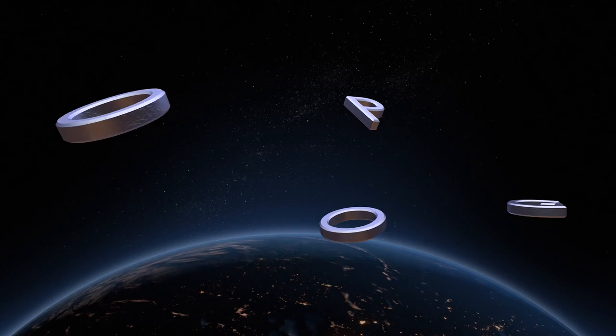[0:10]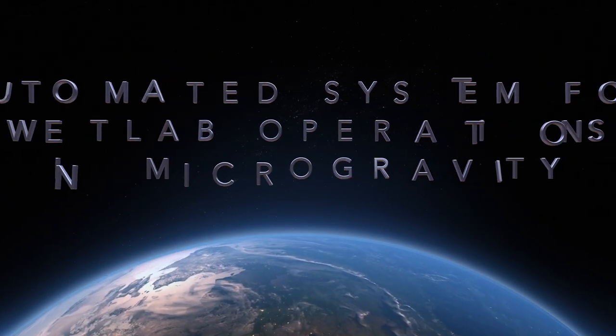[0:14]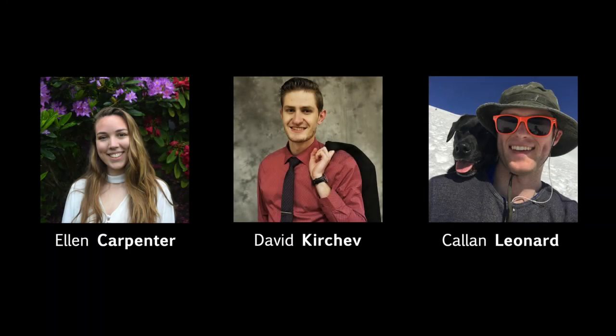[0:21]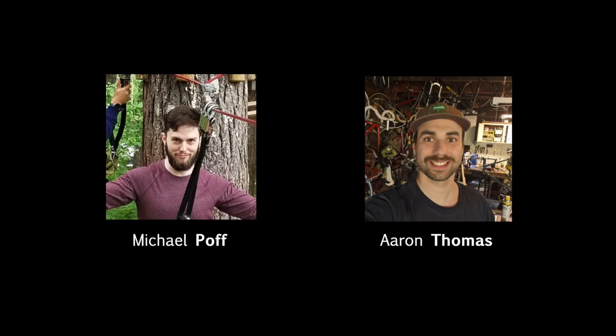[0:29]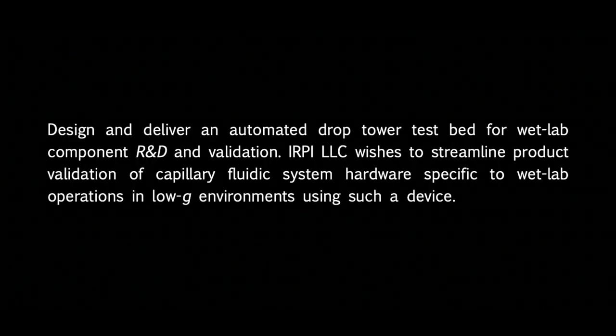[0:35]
This is the automated system for wet lab operations in microgravity, MMEC, Senior Capstone Project. Our group consists of seven members, who are Ellen Carpenter, David Kirchev, Callan Leonard, Josh Mack, myself, Mohamed Polavina, Michael Poff, and Aaron Thomas. The objective of our project is to design and deliver an automated drop tower testbed for wet lab component research and development and validation.
Our sponsor, IRPI LLC, wishes to streamline product validation of capillary fluidic system hardware specific to wet lab operations in low-gravity environments using such a device. Essentially, our goal is to create a microgravity test apparatus, which we call the MGTA, that would meet the predetermined objectives that we were given while taking into consideration reliability, repeatability, and user-friendliness.
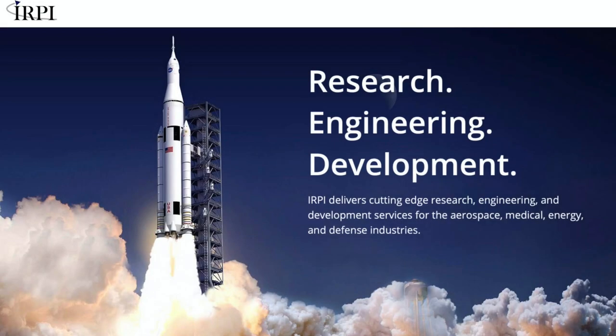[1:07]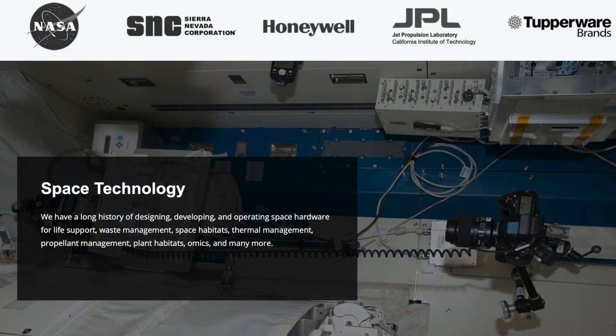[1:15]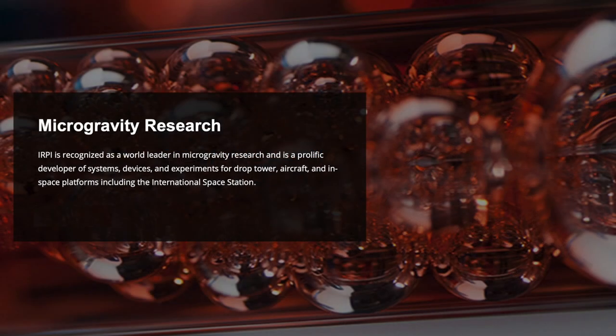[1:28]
Our sponsor, IRPI, provides research, engineering, and development services for the aerospace, medical, energy, and defense industries, and have worked with companies such as NASA, SNC, Honeywell, JPL, and Tupperware brands. They specialize in designing, developing, and operating space hardware for things such as life support, waste management, space habitats, thermal management, and so forth. IRPI is also recognized as a world leader in microgravity research and has been developing systems, devices, and experiments for drop tower tests, aircrafts, and in-space platforms such as the International Space Station.
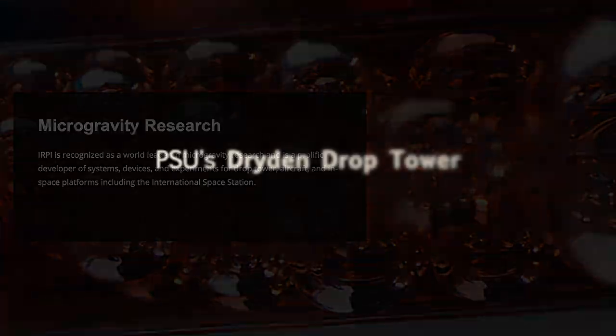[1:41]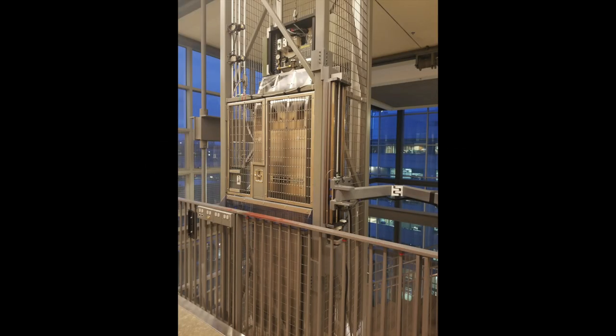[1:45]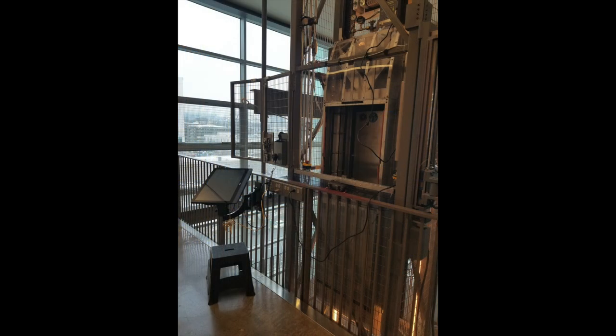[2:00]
PSU has granted us supervised access to their Dryden drop tower located in the engineering building for testing purposes. In general, drop towers can simulate microgravity conditions reaching as low as 10 to the negative 6 G. The Dryden drop tower at PSU can simulate as low as 10 to the negative 4 G, while free-falling a total distance of 22 meters, or 72 feet. The total drop tower height is 31.1 meters, or 102 feet.
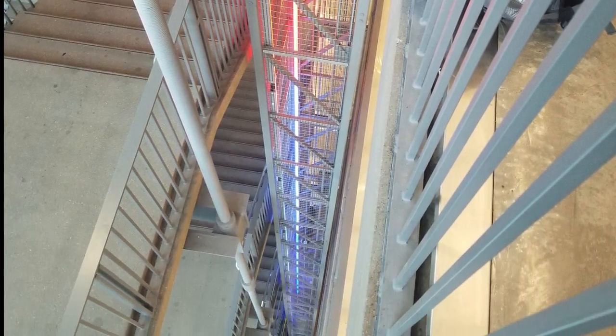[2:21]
The anticipated low G duration during drops is around 2.1 seconds, which equates to the amount of time we have to execute our programs. The object falling in the drop tower experiences an average deceleration force of 8.5 Gs and a peak deceleration force of 15 Gs.
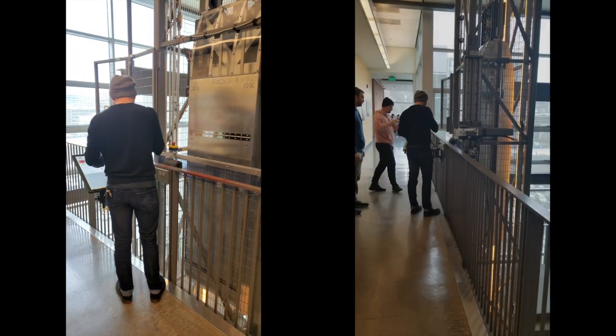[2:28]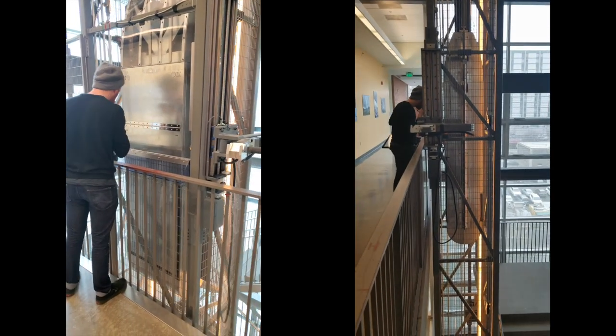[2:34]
Here's the drop tower in action with Jesse Goodman as the operator. There are microphones and speakers installed to help communicate to floors below that a drop is about to occur. 2, 1, drop!
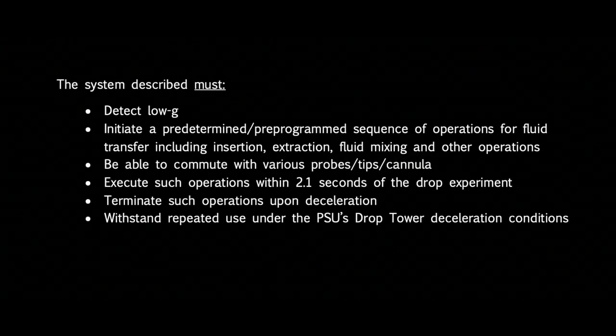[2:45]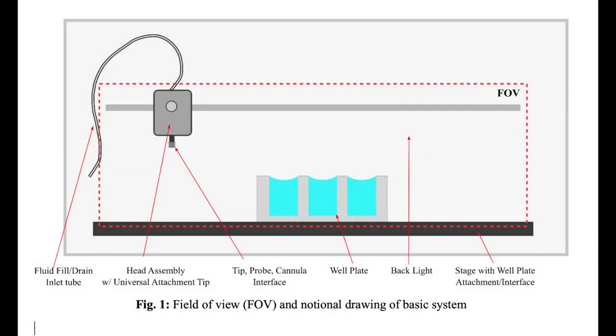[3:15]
Our sponsor, IRPI, has indicated that the system we design must be able to detect low G and initiate a pre-programmed sequence of operations for fluid transfer, including fluid insertion, extraction, mixing, and other future operations. The system must be able to commute with various probes, tips, and cannula, and must complete test operations within the 2.1 second test window. The system must be able to terminate operations upon deceleration and withstand repeated use under PSU's drop tower deceleration conditions. IRPI also provided us this figure, showing an example of an illuminated visual field of view of operations.
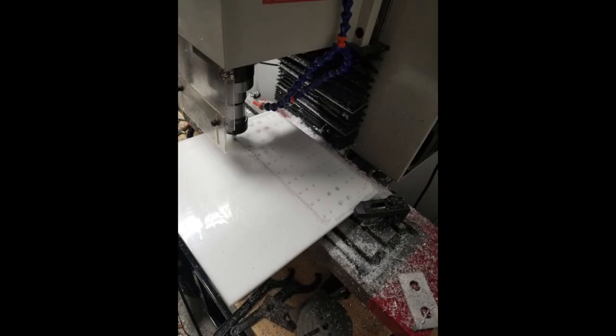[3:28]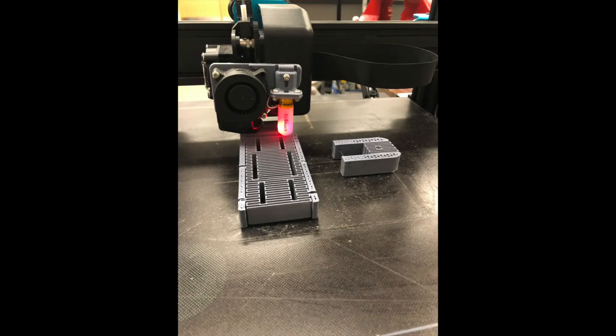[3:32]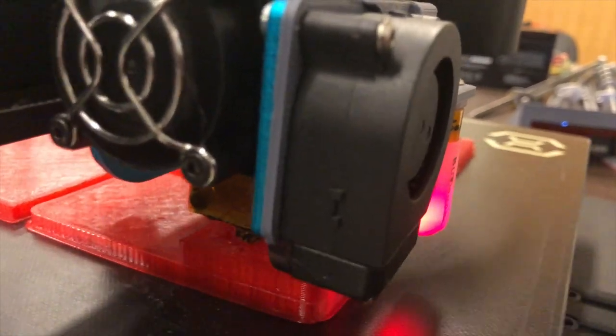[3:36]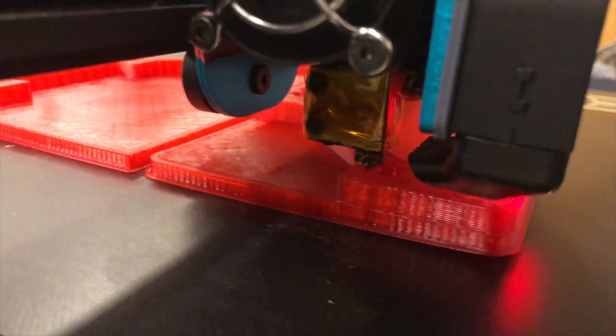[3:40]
The majority of the parts in all of our prototypes were custom designed and manufactured in-house by our team using SolidWorks, Michael's CNC mill, 3D printer, and bandsaw. Here's a shot of the 3D printer making the initial electronics case for the first prototype. For the most part, we used either red or gray PLA Pro, PLA Plus, 3D printer filament for the printer material.
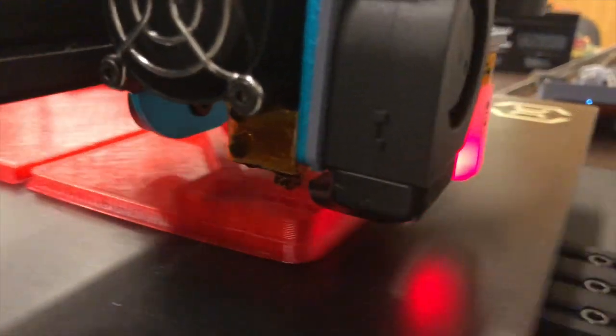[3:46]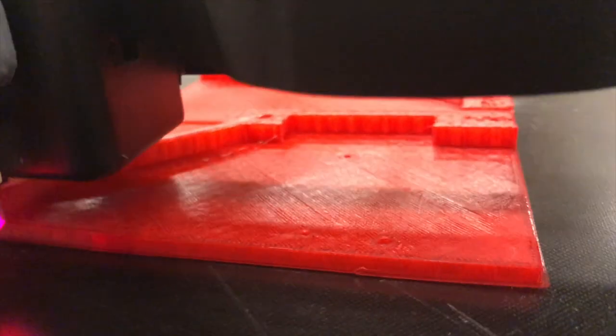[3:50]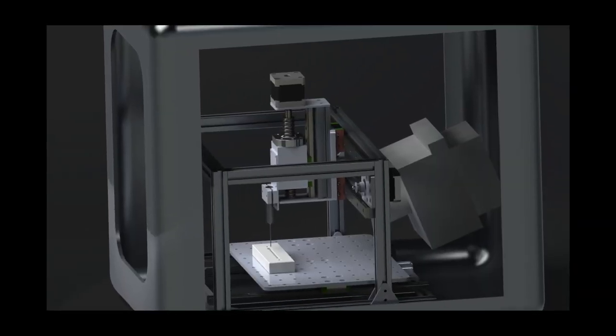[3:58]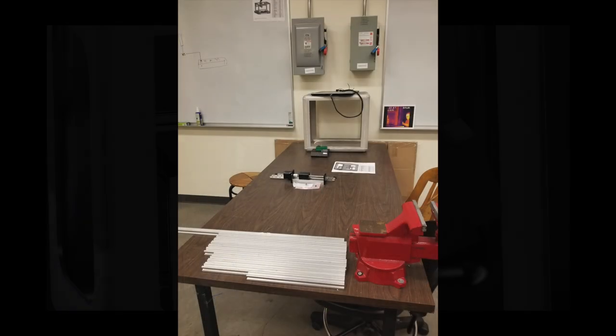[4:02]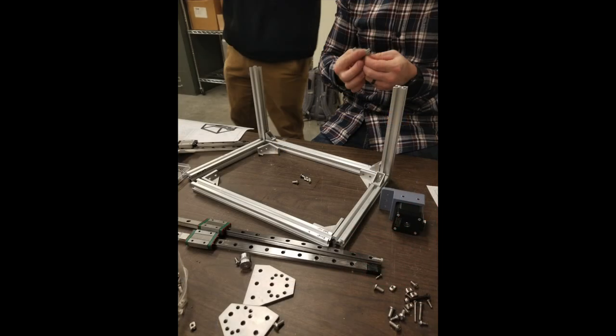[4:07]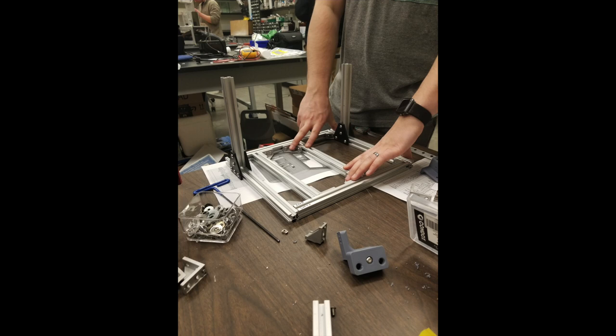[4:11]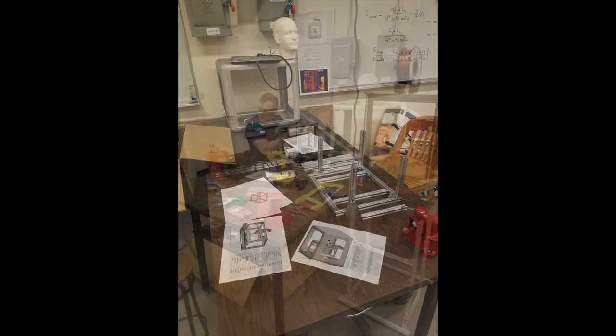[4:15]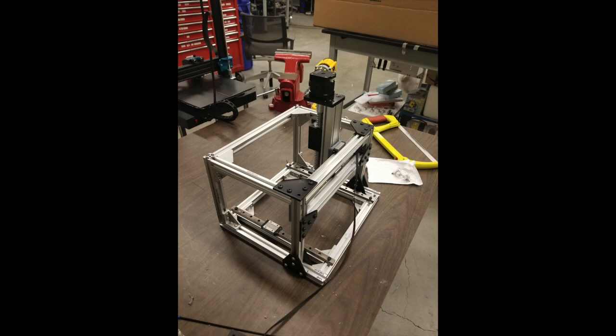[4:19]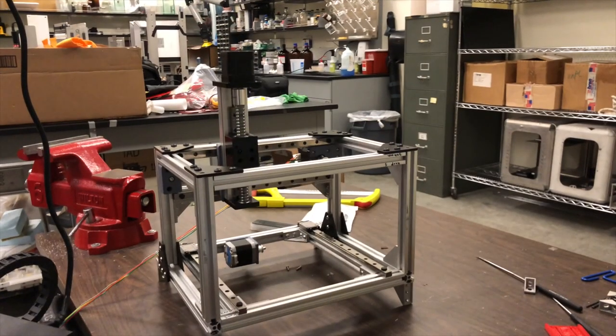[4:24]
The first prototype was our proof of concept, as it was an attempt to see if our collective ideas regarding the MGTA would work. We designed a standalone system which would be placed into the aluminum shell provided by IRPI and PSU. The foundation of the system was made from T-slotted 6063 T5 aluminum extrusion held together by metal brackets and screws. We attached a linear Z-axis ball screw with a built-in stepper motor which gave us 100 millimeters of travel up and down. This was our first electronics control test with the ball screw.
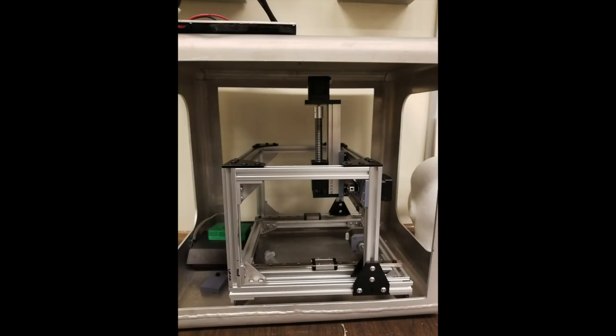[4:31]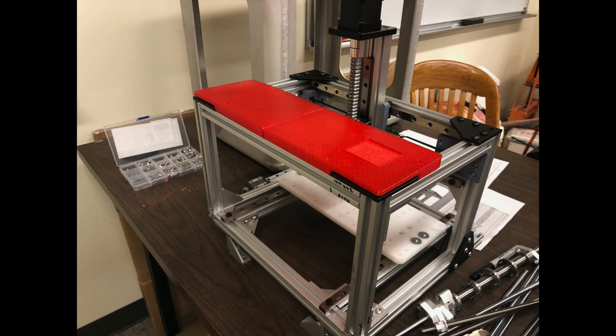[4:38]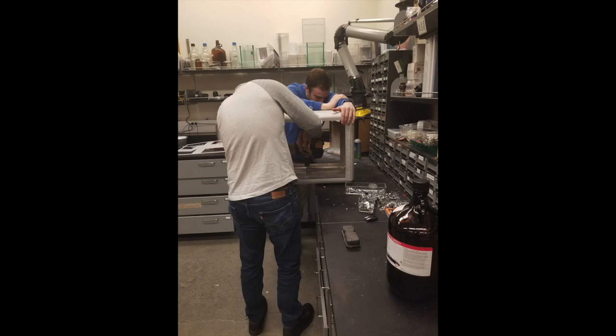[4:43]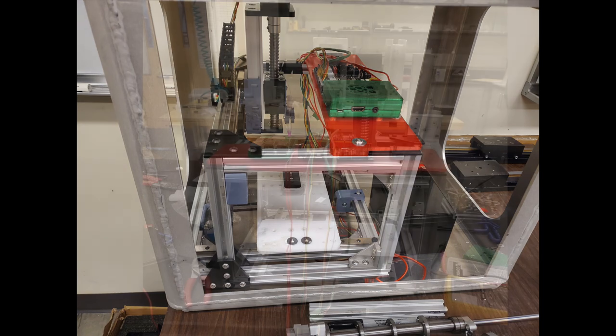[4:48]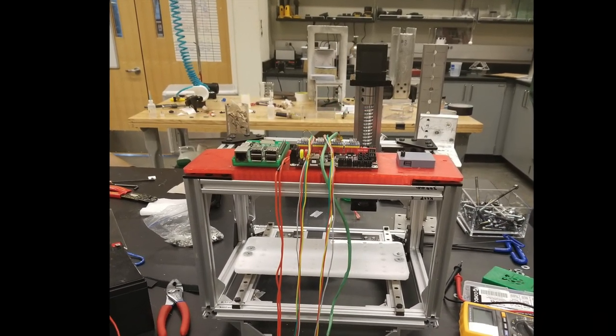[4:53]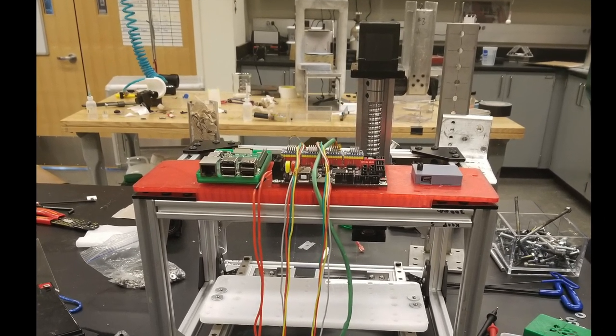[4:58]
We had a sliding bed which was attached to two linear guideways coupled to a single stepper motor. The bed could move back and forth in a single direction at variable speeds and was designed to allow different well plates and objects to be attached to it. We bolted the frame of the system onto the aluminum shell, restricting movement of the MGTA while free-falling in the drop tower. The custom-made electronics case housed the 32-bit panel board controller, a Raspberry Pi for later use, and an accelerometer which we use as a triggering mechanism for the programs once sensing low G.
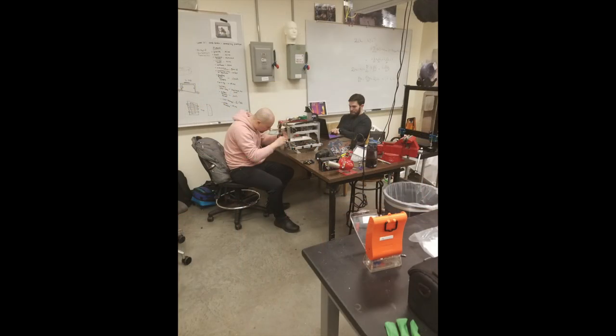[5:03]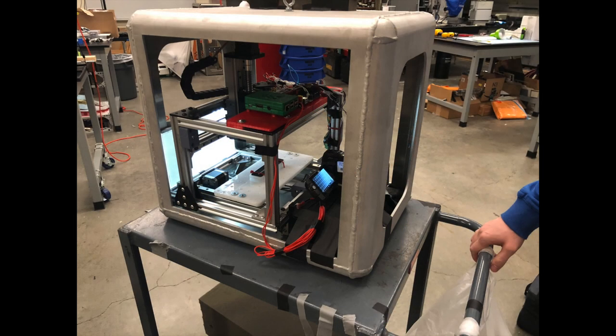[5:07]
After compiling the board firmware and troubleshooting the software, a few dry runs, and ensuring that the rig was balanced, we were ready for our first test drop, which ended up validating our system functionality. This video shows the program we wrote successfully initiated once the trigger sensed low G.
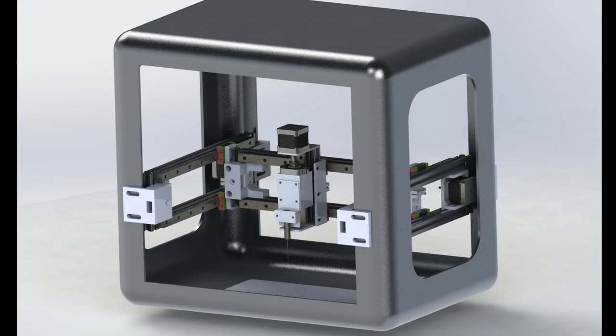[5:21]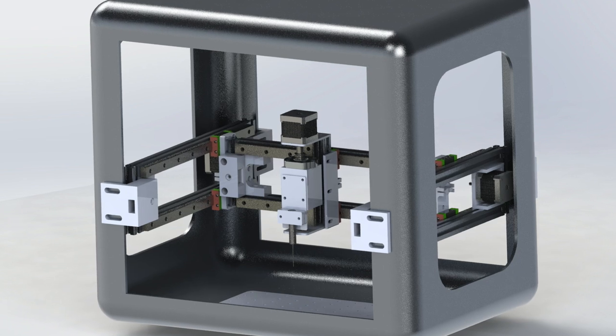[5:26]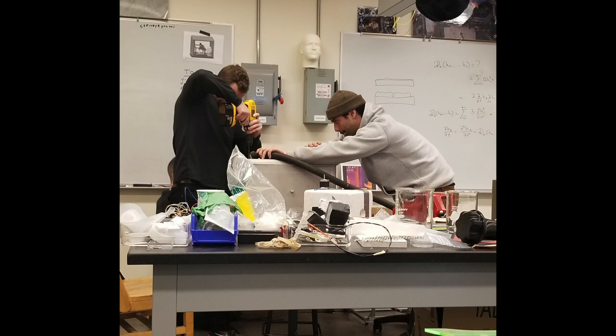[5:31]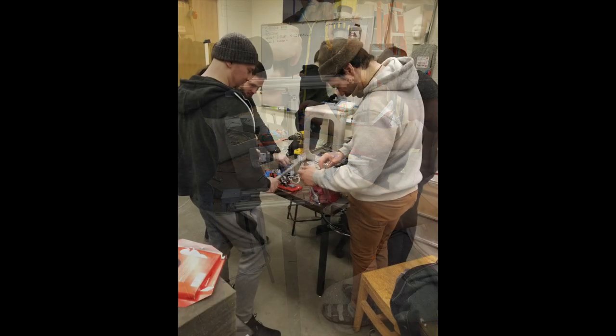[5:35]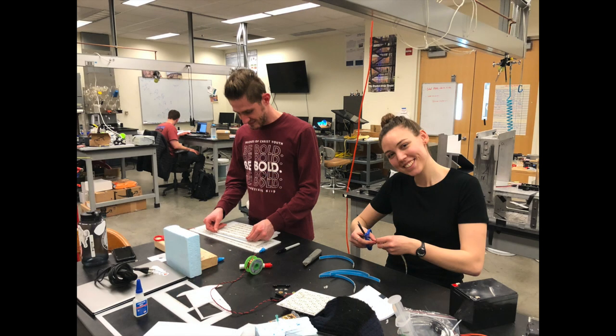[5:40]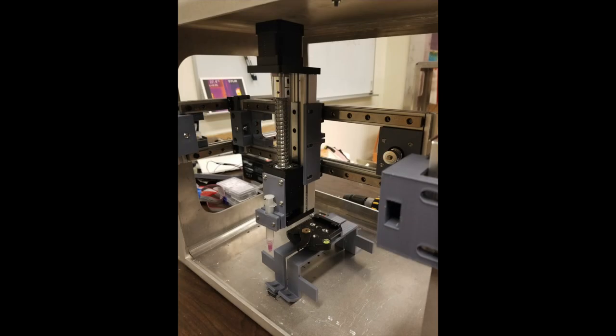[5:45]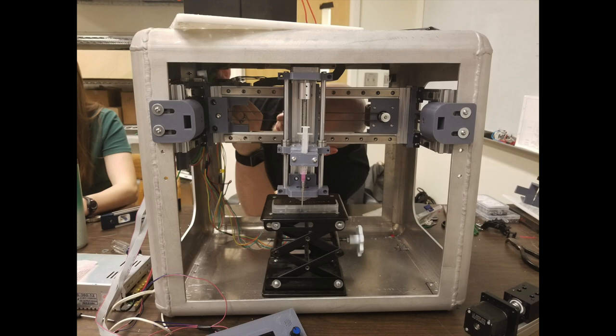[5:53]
After some feedback from our PSU advisor, Mark Weisslogel, and our sponsor, IRPI, we introduced our plans for a second prototype, which would be attached directly onto the aluminum shell we were provided. This eliminated the sliding bed and in turn allowed the probe head to move in all three directions at variable speeds. We were able to reuse most of the frame components from the first prototype with some minor adjustments. We also created a new lighting system made from LED strips with a diffuser attached on top. This updated design allowed us to use the existing mechanism attached to the drop tower to move the MGTA into and out of the drag shield with more ease.
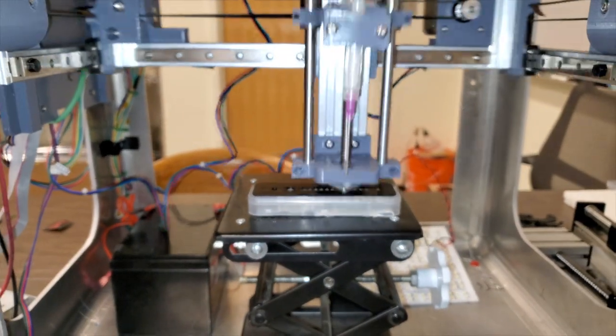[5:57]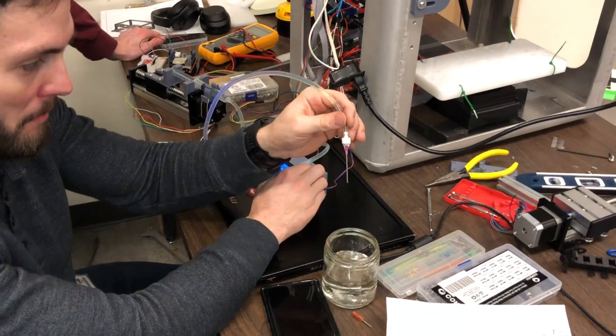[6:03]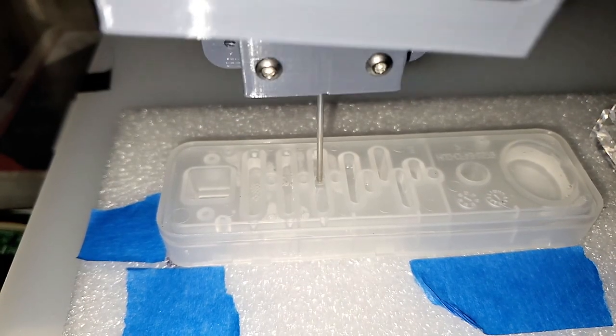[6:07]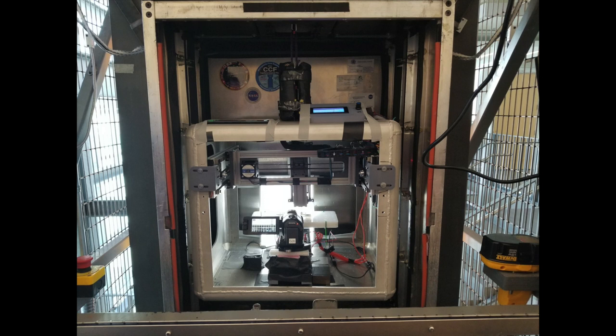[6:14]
This was one of the repeatability tests we ran on the second prototype, which also verified smooth motion in all three directions. We were able to attach our custom-made fluid pump powered by a stepper motor connected to the main board. Here's the system in action with the pump inserting and extracting liquid through the needle attached to the probe head.
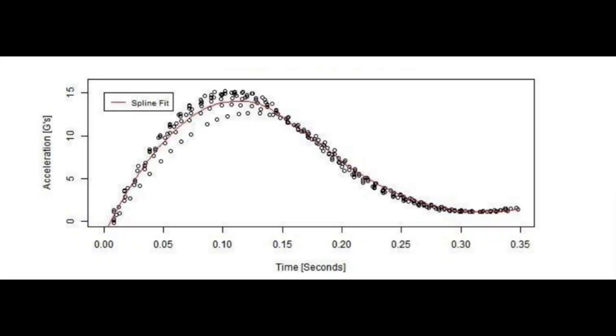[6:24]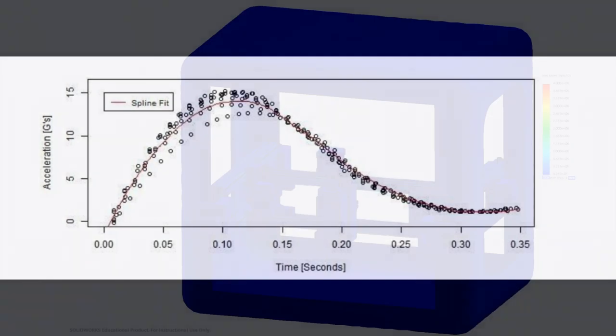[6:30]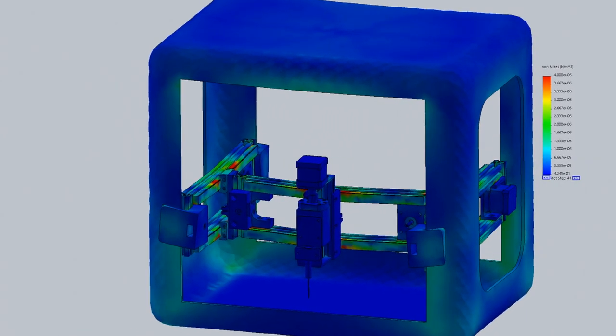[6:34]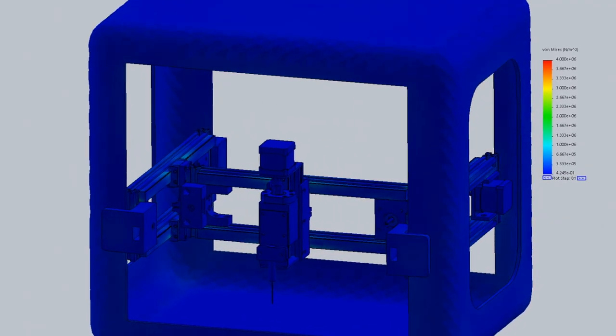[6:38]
We were able to run a few drop tests with the second prototype and gather vital data which allowed for further analysis. Using data collected from an IMU attached to the MGTA during several drops, we confirmed that the maximum impact forces reached about 15 Gs during deceleration. This data was then used to simulate drop conditions using finite element analysis software, which allowed us to continue studying the forces and deformation on the different subsystems in our models.
The data we captured for our second prototype showed an overall factor of safety of about 80, which means that this model was over-designed. The issue we discovered was, because the probe head, which was fairly heavy, hung off of the two support rods, it acted like a cantilevered beam. Because the center of mass was offset from the center of geometry, when acceleration was applied downwards, the probe head wanted to twist the two rods, creating a moment.
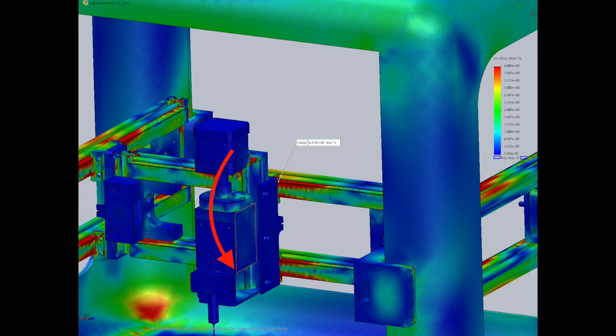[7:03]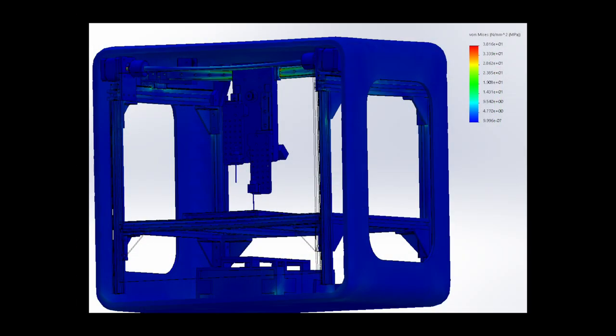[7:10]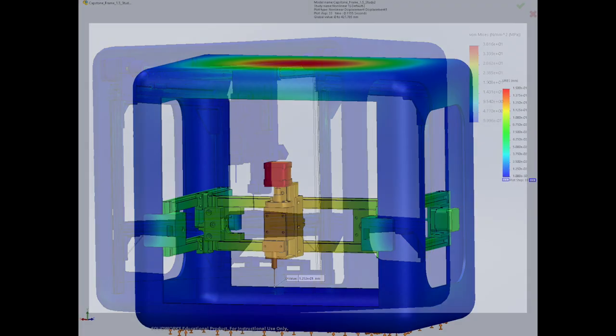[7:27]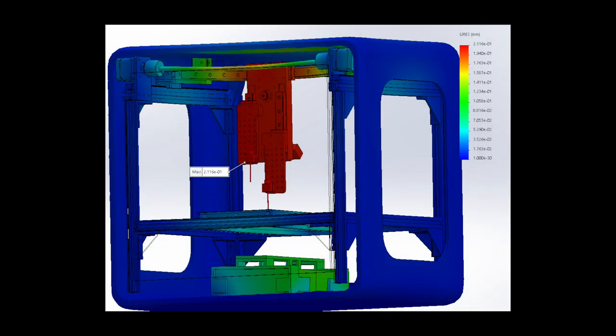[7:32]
We actually saw the two support rods twist out of position slightly with each drop, even though they were both secured to the frame. For this reason, we adjusted the design again in the third prototype, eliminating a lot of unnecessary weight, and reduced the factor of safety to a more reasonable value of 3.7. We moved the stepper motor down and behind the linear rail, which acts as a support rod. The center of mass is now roughly on the bearings, which should result in much less twist. Maximum vertical displacement stayed below 0.25 mm for both the second and the third prototypes.
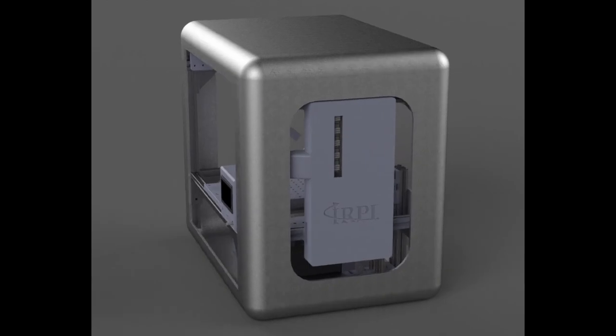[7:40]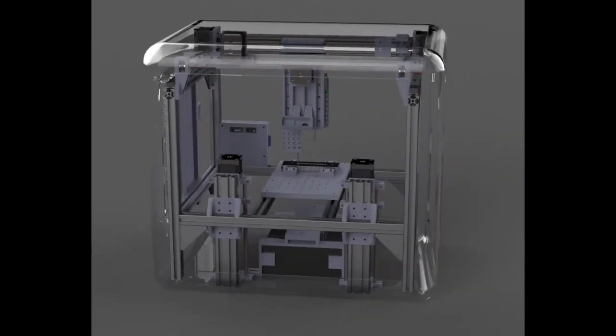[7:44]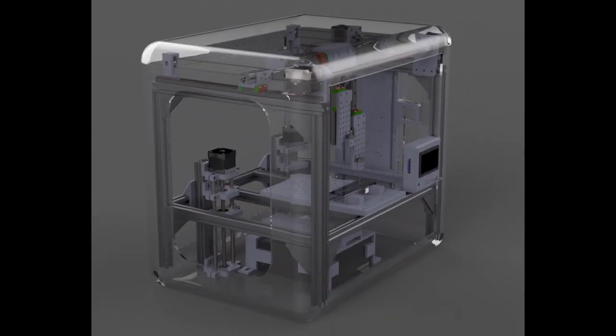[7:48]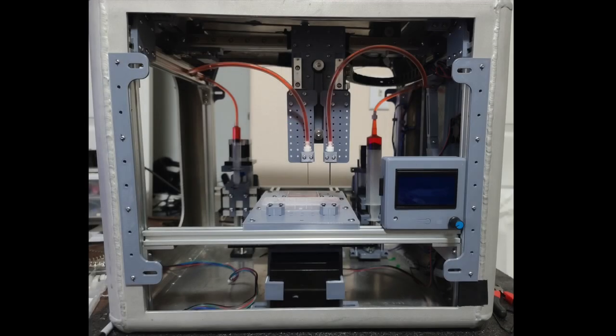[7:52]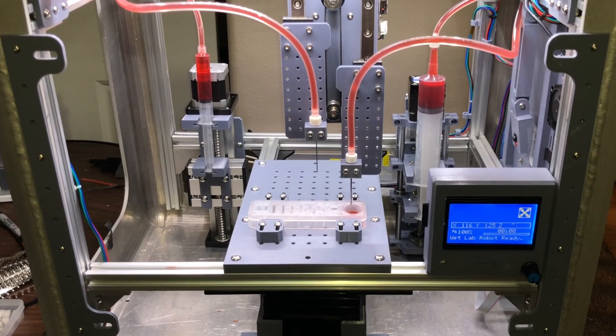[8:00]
This is our third and final prototype, and is the culmination of our research and experience gained throughout this last year. Many components of the second prototype were changed with this new design, which allows for more space inside of the rig, better access to all of the components, and a more sophisticated probe head, or end effector. As you can see, the final prototype now has two different pumps connected to different probes, with a new mechanism allowing for interchangeable tips on each one.
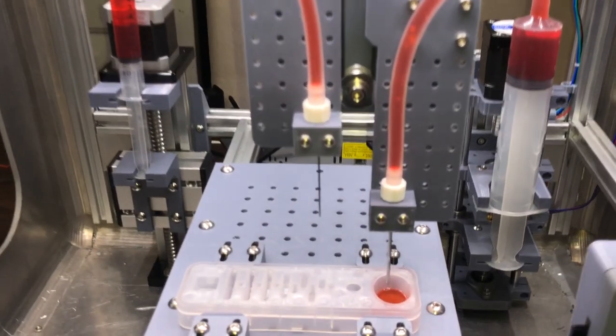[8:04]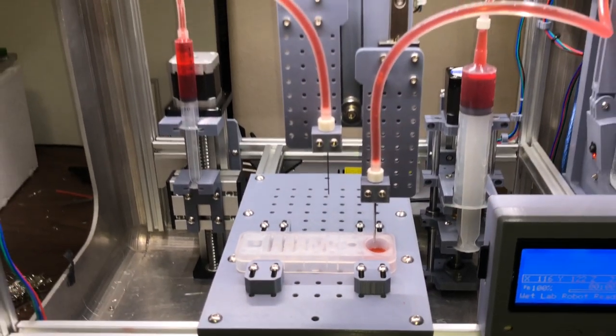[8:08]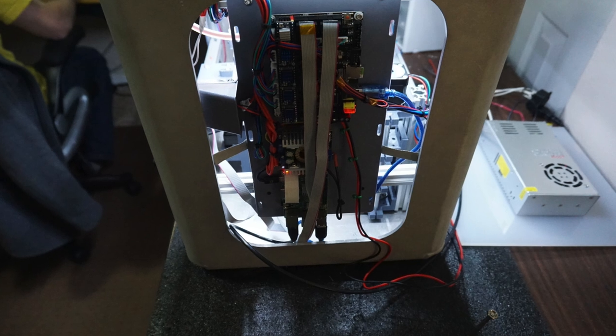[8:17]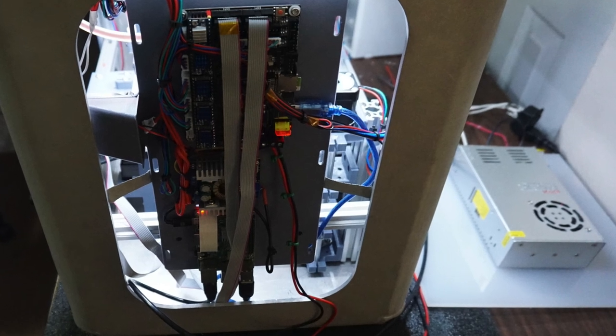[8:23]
We have two smaller cameras for user visibility, a larger LCD screen attached to the front, which has an SD card slot on the side, and an integrated electronics case housing all of the important components which make the MGTA work. In order to preserve the two 12-volt batteries that we have, we connected the system to a designated power supply shown on the right.
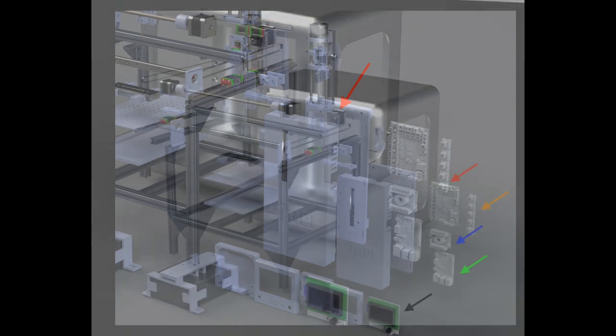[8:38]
The electronics case has our sponsor's logo imprinted on it and an opening for the heat sinks on the stepper drivers. There are also openings along the sides allowing for airflow coming in from the fan, which we have installed on the left, which should prevent overheating of the system. The LCD screen is depicted here by the black arrow on the bottom. Its case houses an Arduino on the back side with an integrated accelerometer which we use as our trigger.
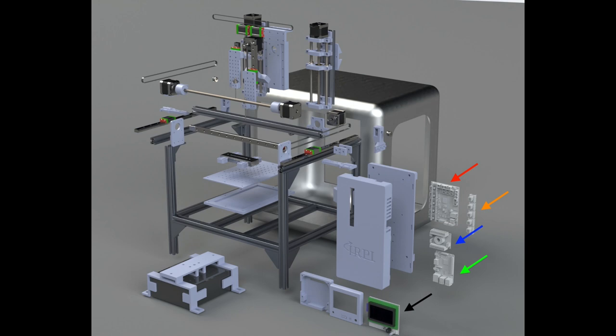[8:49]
The electronics case itself contains four separate components. The main 32-bit SKR controller is shown by the red arrow, and the stepper drivers, which sit on top of the SKR controller, and their heat sinks are shown by the orange arrow. We also have a voltage step-down regulator, shown by the blue arrow, which provides a step-down from 12.8 volts to 5.2 volts, which powers the Raspberry Pi. Unfortunately, the main controller does not have an onboard voltage regulator like some other microcontrollers, which is why we needed to install the voltage step-down regulator.
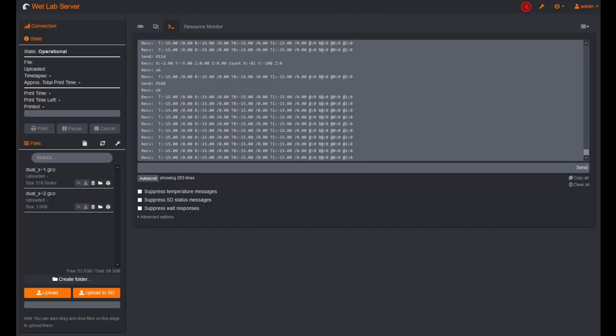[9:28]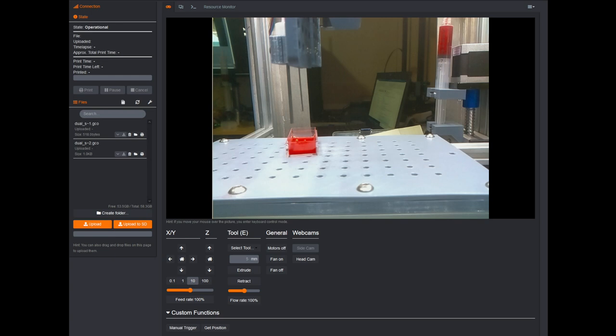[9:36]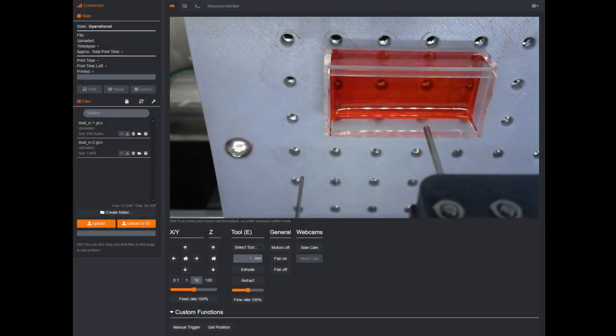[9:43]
The last component is the Raspberry Pi, shown by the green arrow, which is formatted with an open-source 3D printer software called Octoprint. This software allows us to connect to the system via an Ethernet cable attached to the Raspberry Pi or via Wi-Fi. Octoprint also allows for live access to the system with on-screen controls and access to the webcams placed inside of the rig. The user can retrieve the exact coordinates of the wells they are trying to integrate into their program using this software. It can be run on any computer regardless of which operating system is installed.
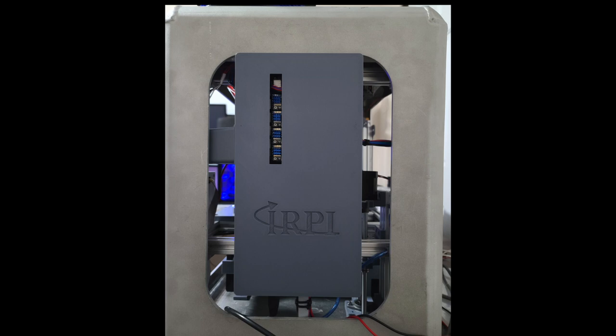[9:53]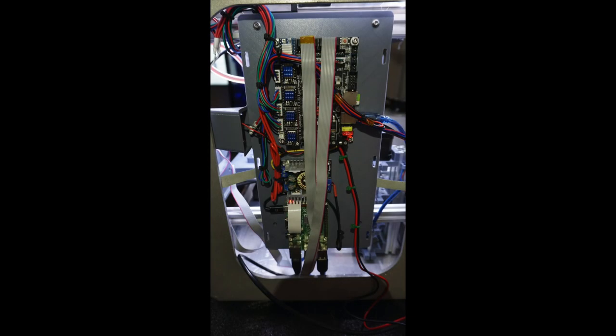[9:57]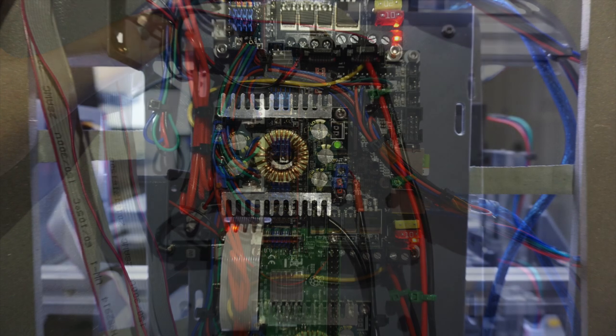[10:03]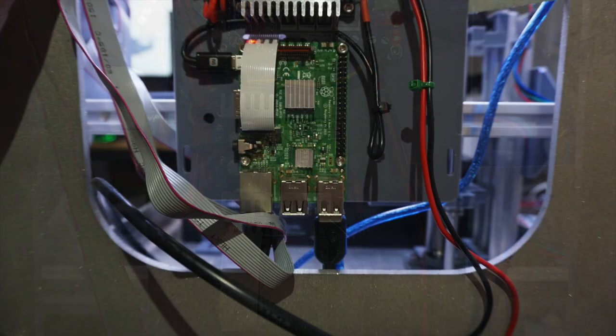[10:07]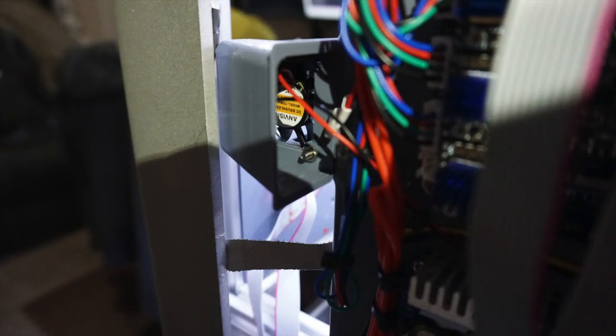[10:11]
Here are a few pictures of the electronics case with all components connected and its cover. This is the 32-bit main controller with everything plugged in and cable managed. This is the voltage step-down regulator, and this is our Raspberry Pi at the bottom. We also have a small fan installed on the left, which has a custom vent attached to it. This fan helps cool the system after long periods of use.
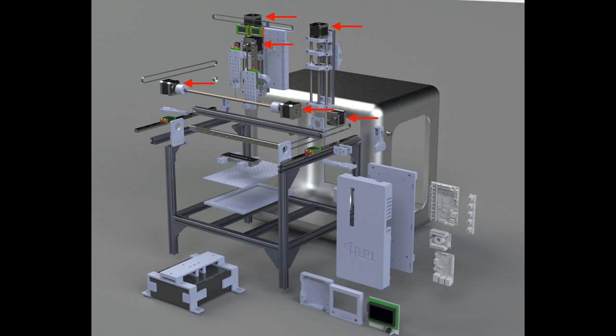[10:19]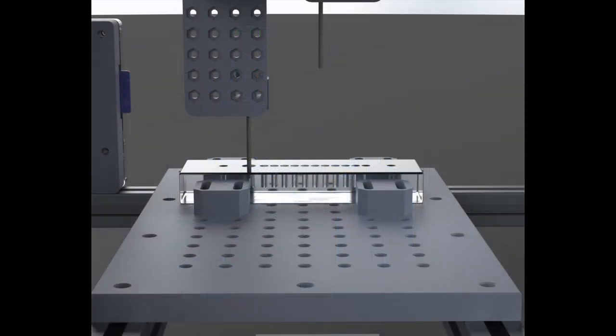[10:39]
There are a total of 6 stepper motors installed, 2 of which are mechanically coupled, which allow the MGTA probe heads and pumps to be moved by the user, either through a pre-programmed code or by using the LCD screen and knob in the front. We also have a battery case which holds the 2 12-volt batteries down to the bottom of the aluminum shell. The testbed and well plate attach pieces were also custom designed.
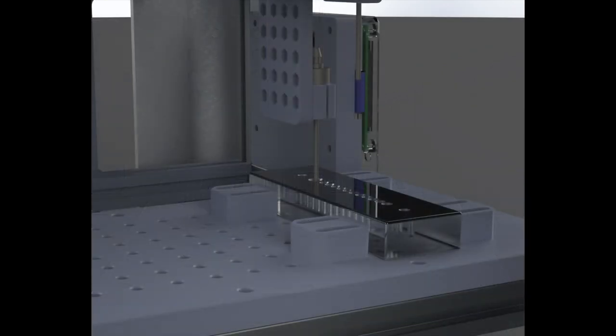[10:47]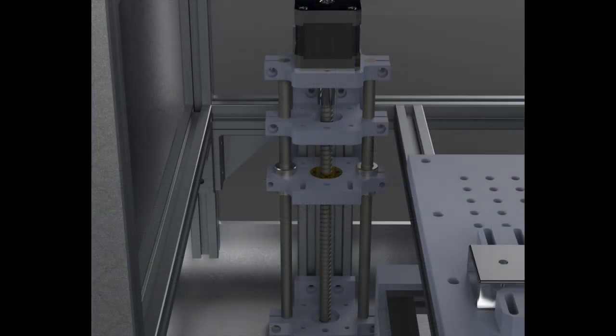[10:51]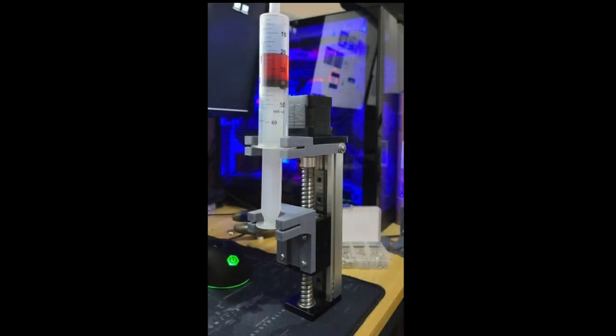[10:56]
The bed features screw nuts installed in each hole, allowing the feet to be fastened into place, which secure the well plate from any motion during drops. What's neat about this final design is that the user can complete multiple tests with different fluid types using the 2 separate pumps. They can even do tests with fluid mixing without contaminating both fluid sources.
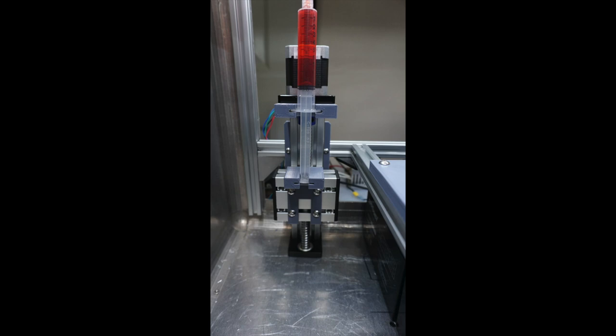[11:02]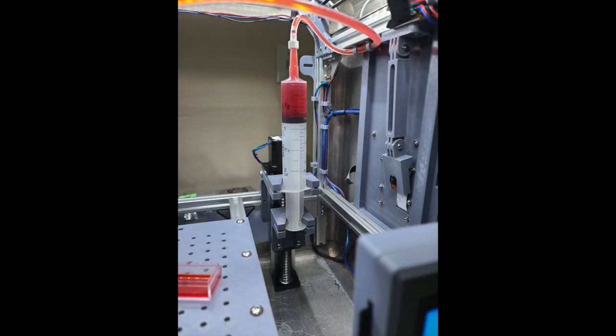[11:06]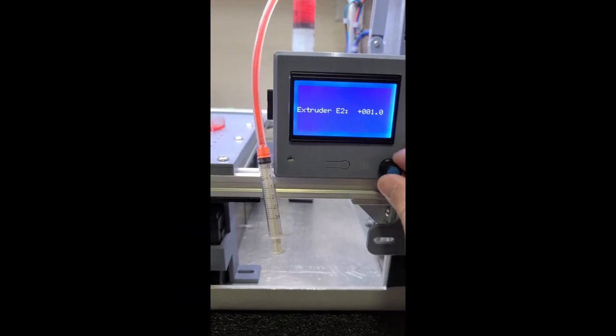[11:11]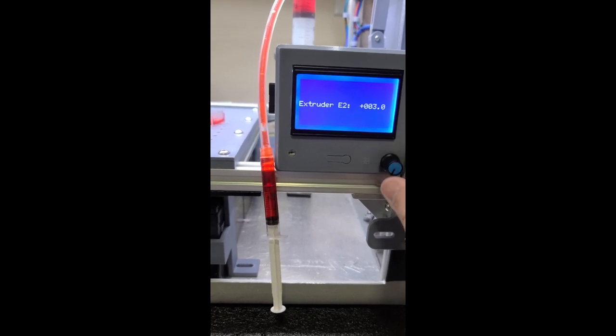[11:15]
Both pumps can insert or extract liquid at variable speeds. One of the pumps is larger, giving it the ability to exert more pressure since its control volume is also larger. Here's a video of the smaller pump in action using the knob attached to the LCD after running through a calibration algorithm.
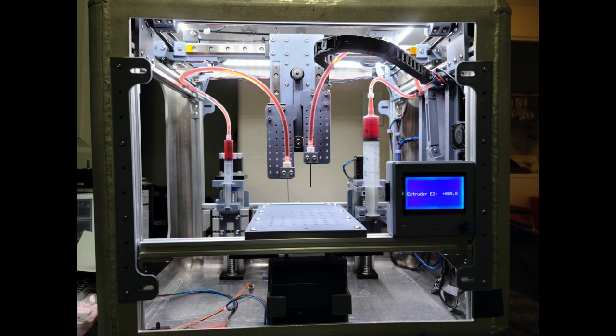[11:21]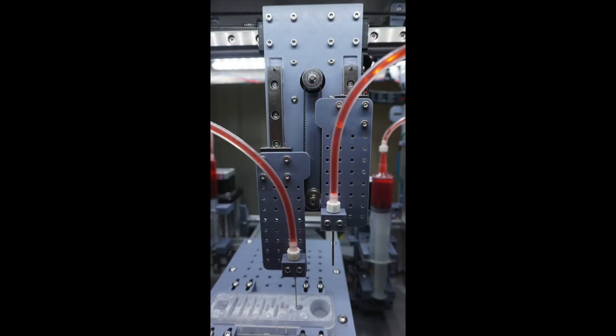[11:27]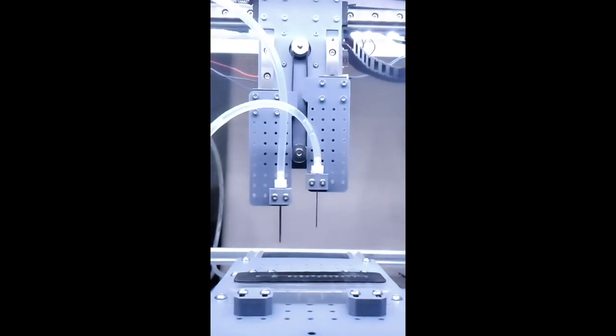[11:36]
We had a few electrical problems with the first iteration of our lighting system, so we decided to attach new LED strips along the ceiling of the aluminum shell. The new LEDs are capable of outputting 450 lumens, and we left an additional cable disconnected in case our sponsor needed to attach an additional strip for more light.
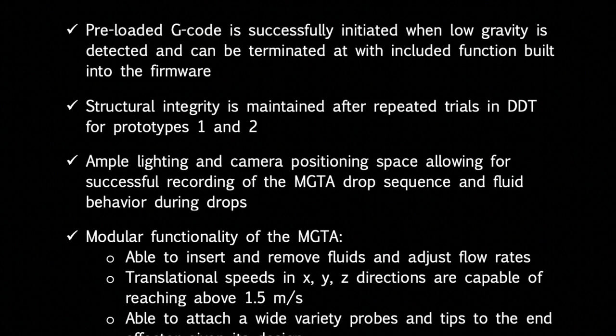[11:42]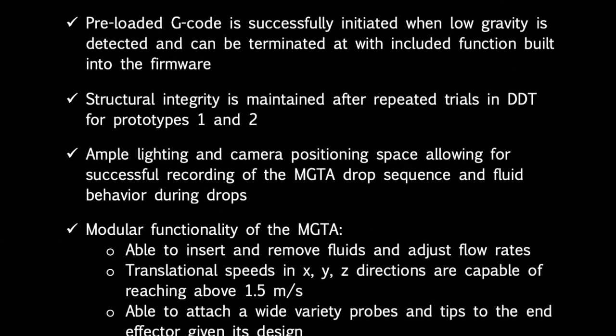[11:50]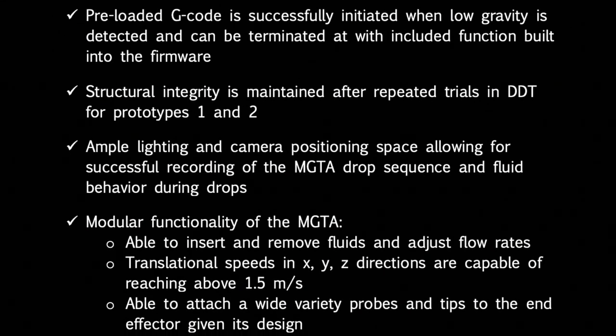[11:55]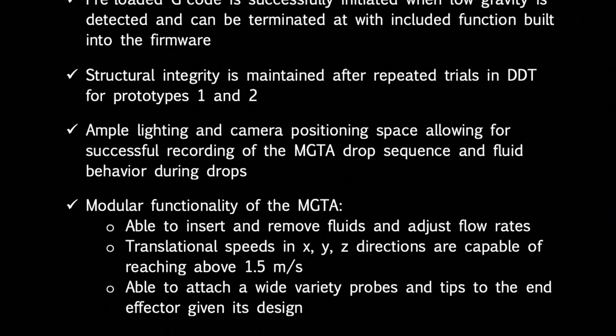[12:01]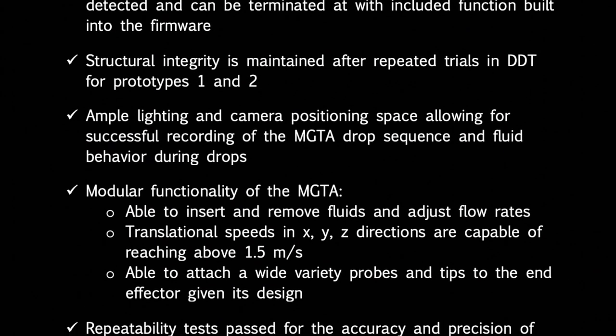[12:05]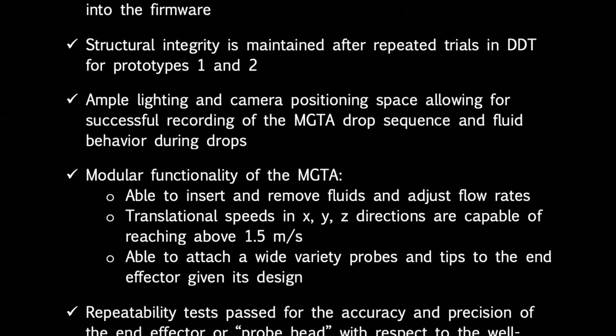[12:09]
Our team, the capillary crew, was able to successfully meet all of the aforementioned objectives set by our sponsor and PSU advisor. We were able to successfully preload programs written in G-code, which are initiated when low gravity is detected by the accelerometer trigger. The firmware in the controller has the ability to terminate the program once deceleration is complete, but we have left this feature off as we were unable to test or calibrate the feature due to current COVID-19 conditions. We confirmed that the MGTA maintained its structural integrity by physical tests for the first and second prototypes.
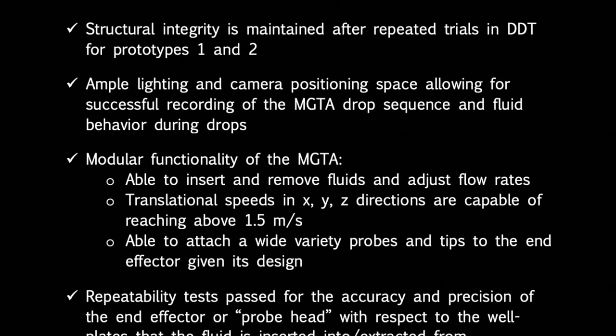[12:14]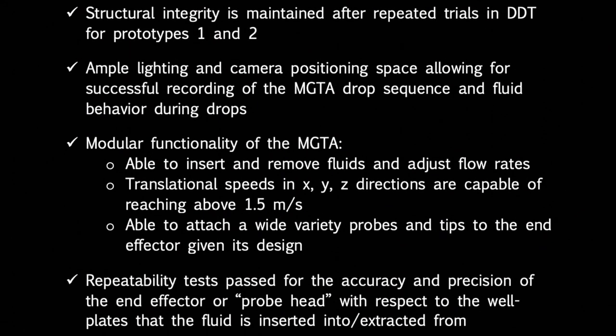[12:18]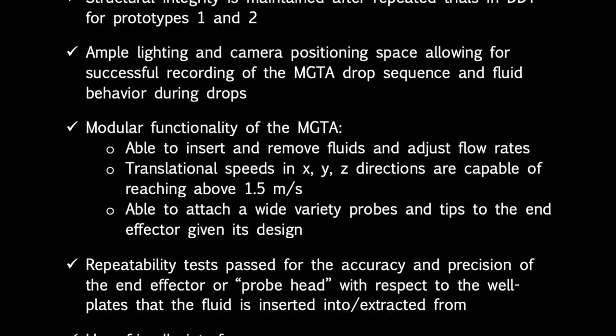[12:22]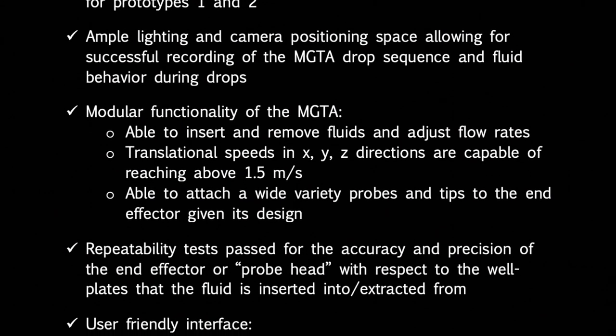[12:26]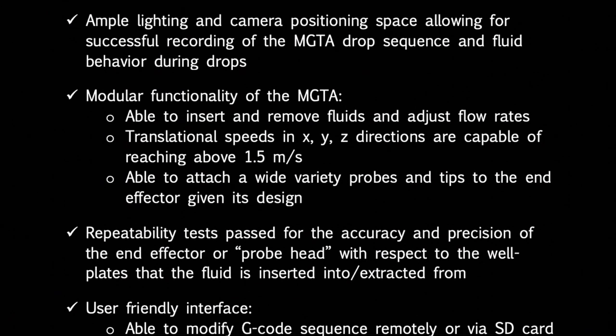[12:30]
Given that the campus closed due to COVID-19, we were unable to perform physical testing of our final prototype, but ran multiple FEA simulations instead, which showed an overall factor of safety of 3.7. We have ample lighting with our LED positioning and ample space for the Phantom camera, which is set to arrive soon. The MGTA is highly modular and can insert and extract fluids with adjustable flow rates.
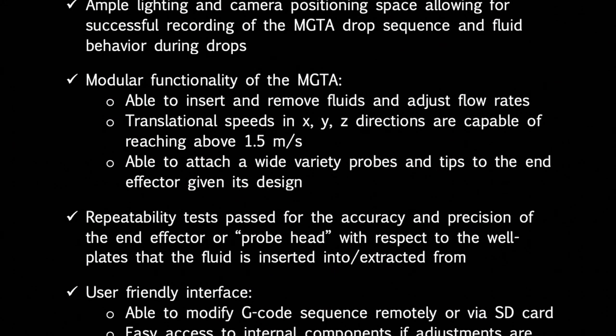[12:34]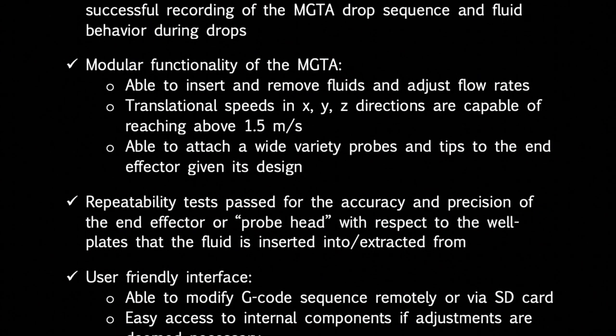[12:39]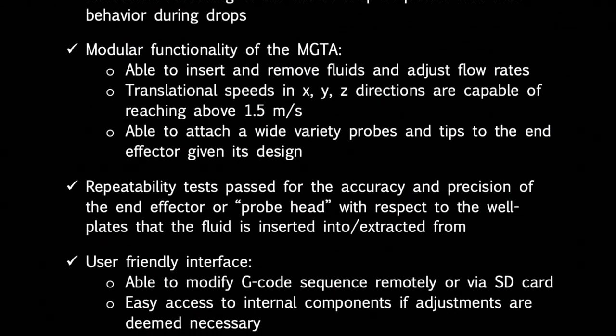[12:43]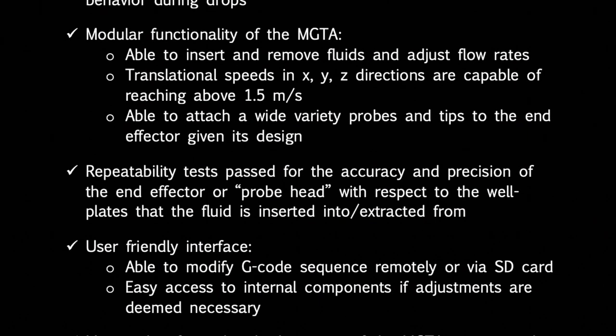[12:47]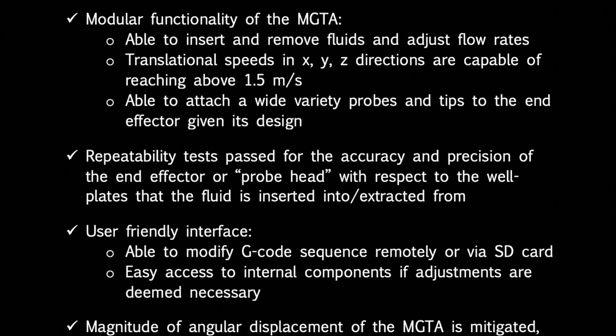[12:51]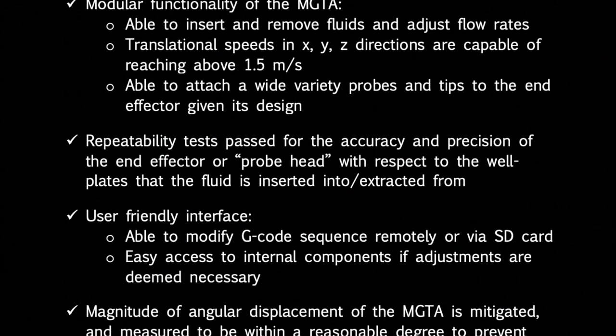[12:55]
The translational speeds of the MGTA in the X, Y, and Z directions are capable of reaching above the 1.5 meter per second requirement. The user is also able to attach a variety of different probes and tips to the end effector, given the nature of its design. Repeatability tests pass for the accuracy and precision of the end effector or probe heads with respect to the well plate that the fluid is inserted into or extracted from.
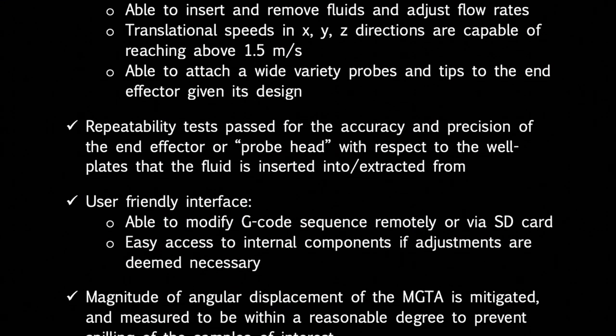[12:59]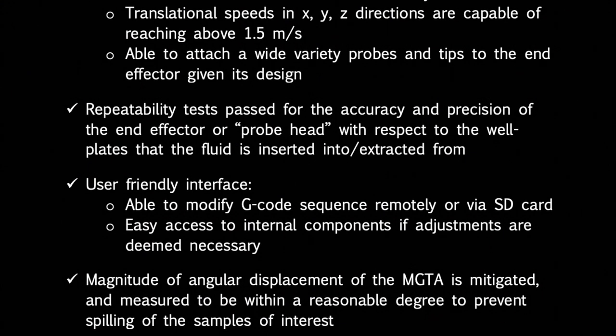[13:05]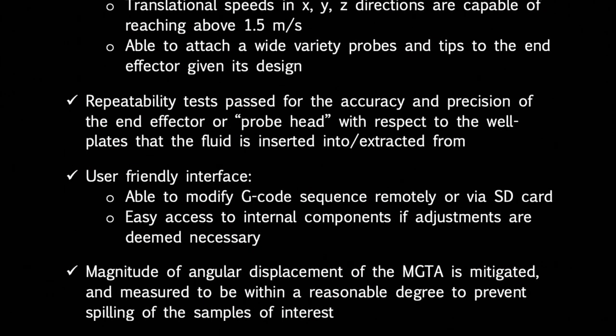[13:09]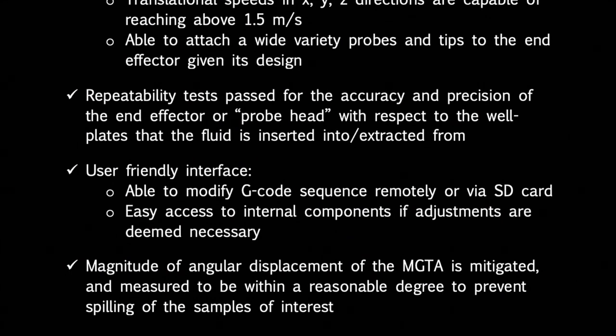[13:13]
The MGTA also has a user-friendly interface with the ability to modify G-code programs remotely or via an SD card which is included. The internal components are all easily accessible if adjustments are deemed necessary. With the final design, we also reduce the magnitude of the angular displacement of the MGTA, preventing spilling of samples in the wells of the well plate. The following is an example test sequence.
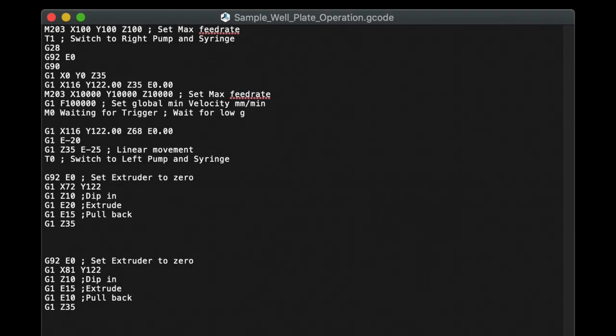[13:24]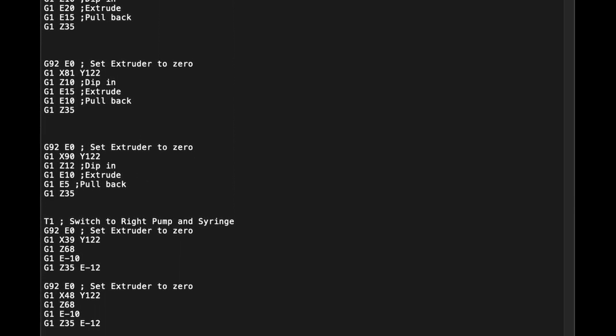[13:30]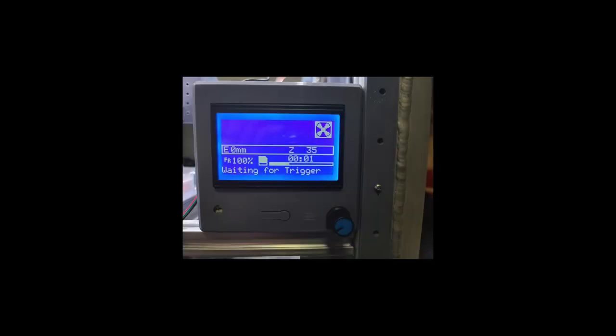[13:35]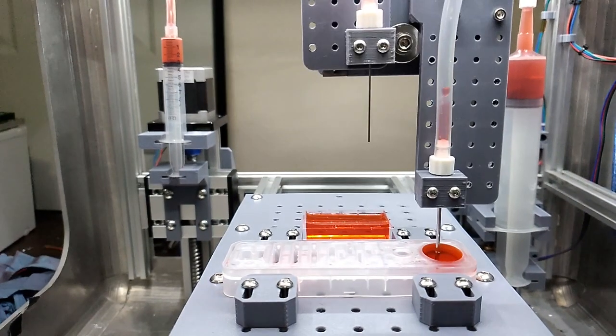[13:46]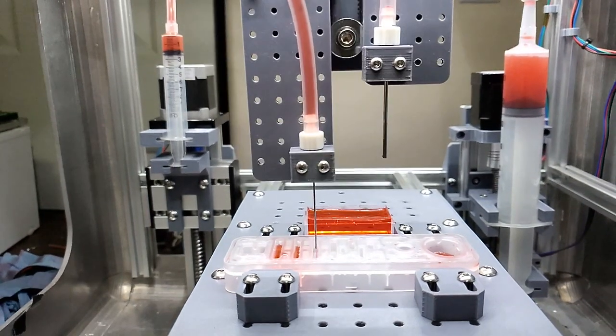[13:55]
The text file containing the G-code for the program is uploaded onto an SD card which is inserted into the side of the LCD housing, or onto the Raspberry Pi from the Octoprint server depending on what the setup is. When the MGTA is loaded into the drop tower, the controller waits for the trigger to initiate the sequence. The trigger was designed to be initiated either by the accelerometer when detecting low gravity, or via a push of the front knob. This is an example test recorded in slow motion showing both pumps and probe heads in action. Here's the same test in real time.
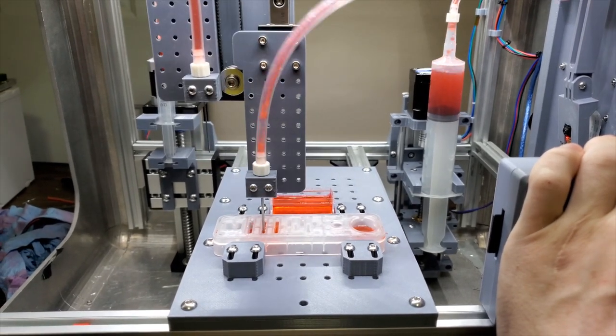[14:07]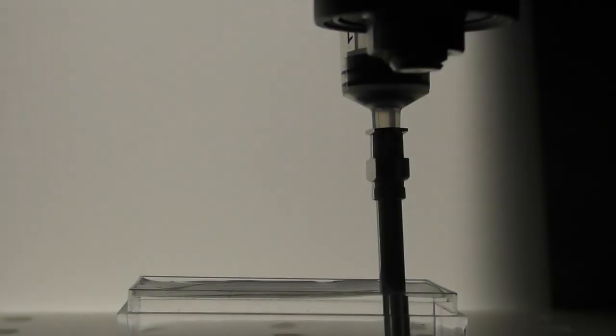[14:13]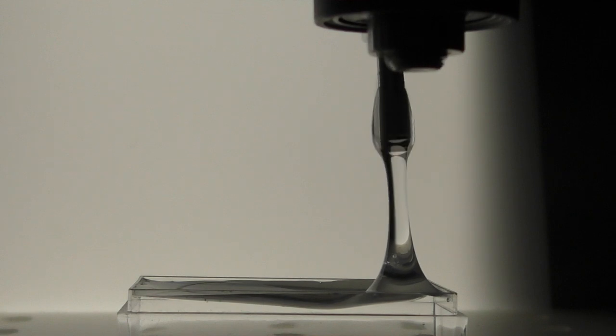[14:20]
Here's another test that we ran for a PSU grad student with our second prototype. They were trying to see how far the viscous fluid bridged when the syringe was removed from the well. The angle of the camera did not capture the entire length of the fluid bridge, so we added a mirror to the back of the test bed and adjusted the angle of the camera to get a better view of the phenomena occurring.
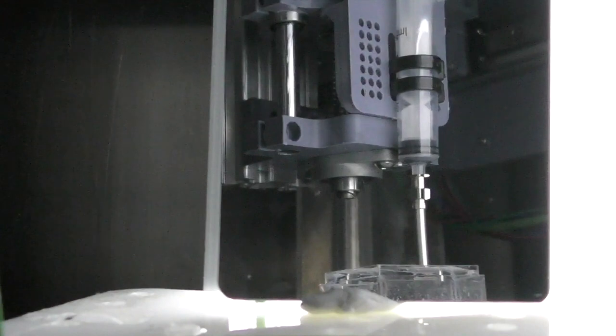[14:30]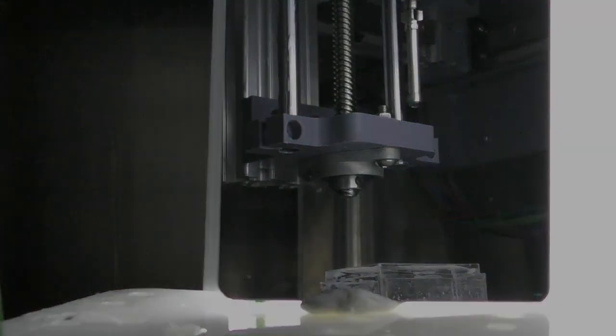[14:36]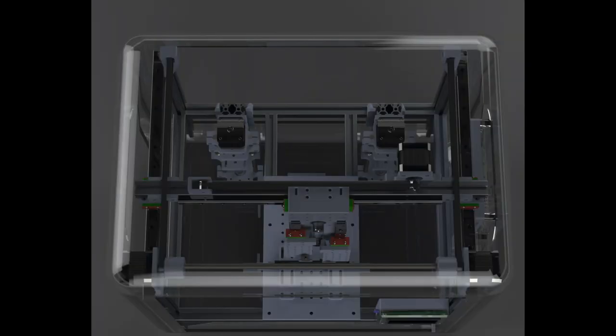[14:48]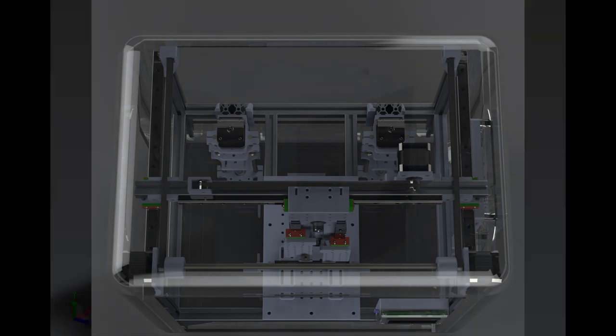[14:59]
As we did not have access to the drop tower for the majority of the spring term, we were unable to test our last prototype. Because of this, we were not able to calibrate the sequence termination function once the MGTA completes deceleration. A series of drop tests should be run to confirm the functionality of the accelerometer trigger, as well as to confirm the structural integrity of the MGTA and the results of our FEA simulations.
As we did not receive the Phantom camera, we were unable to create a platform to mount it onto. We did leave ample space for a camera mount to be installed, which will need to be completed at some point in the future. Our team believes that this was a successful Capstone project. We hope that our microgravity test apparatus, which we named the MGTA, will be used for further studies and help alleviate the complexities of setting up an experiment from scratch to test fluid phenomena in low-G environments.
I want to thank our team for sticking together and finishing this project despite our circumstances due to COVID-19. A special thank you to Michael Poff for volunteering to take on the majority of the physical build for the last prototype at his home, as we were unable to continue working on the rig on campus. We started with an idea, refined it, and created a working final product in the end.